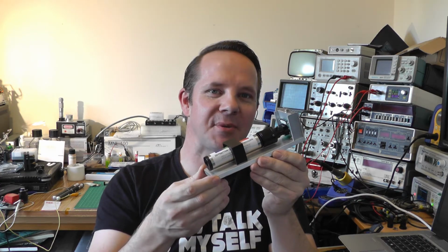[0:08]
In a previous episode, we took a look at a homemade Raspberry Pi spectrometer like this. One of the most frequently asked questions I got at the back of that episode was, well, can we make it smaller? So in this episode, that's exactly what we're going to do.
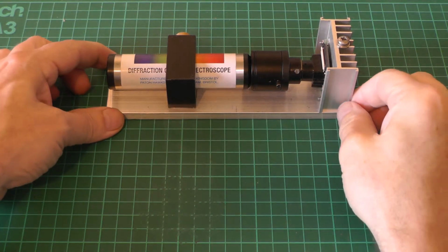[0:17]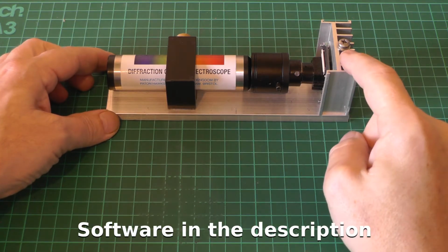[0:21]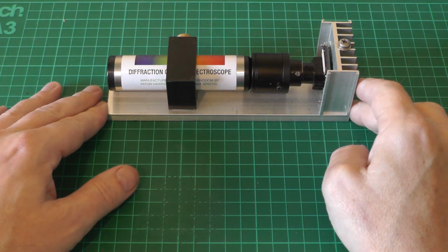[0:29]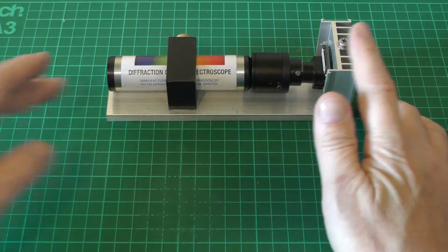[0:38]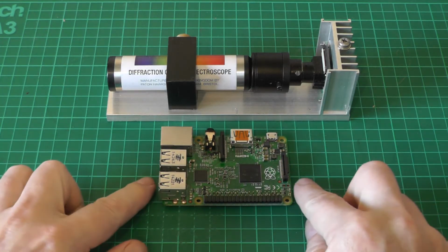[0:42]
So let's go. Back in episode 20, I demonstrated the homemade Raspberry Pi spectrometer, which very simply consisted of a Raspberry Pi camera, a zoom lens that I picked up off eBay, and a diffraction grating spectroscope, which came from Paton Hawksley, who are a UK company that produce diffraction gratings and spectroscopes for educational purposes. Yeah, it was a pretty useful tool. It's a little bit on the large side. If we compare it with, say, a Raspberry Pi 3, yes, it's quite a large spectroscope.
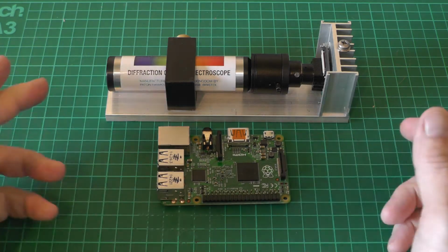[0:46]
There's been a lot of comments, you know, can we shrink this? Can we make it any smaller? There was some talk on Hackaday about maybe integrating something like this into tricorders, like Star Trek tricorders, right? There are actual projects where people are trying to build these things. Can we shrink this thing?
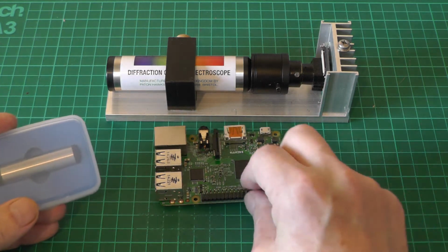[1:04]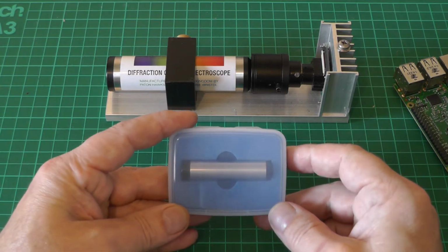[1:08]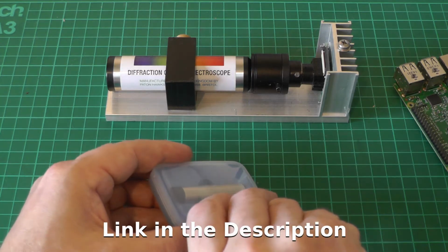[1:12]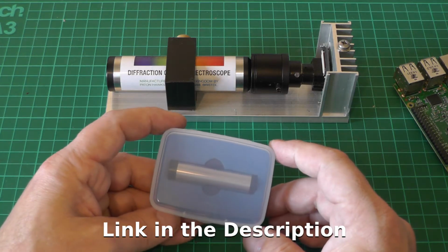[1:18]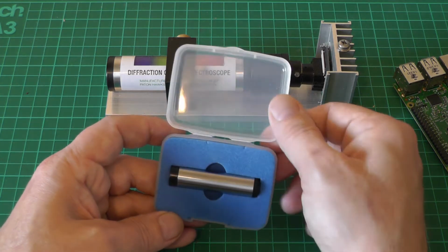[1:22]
At the back of the video where I demonstrated this, the director, Tom, from Paton Hawksley, actually sent me this, which is a miniature version. Really, really generous gift. This isn't a sponsorship or anything like that. It was just a thank you for the orders that have been generated, essentially. He sent me some other kit as well, which will be featured in upcoming videos, no doubt, diffraction gratings and slits and so forth.
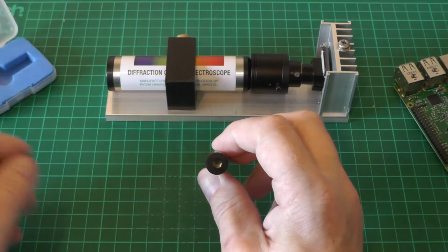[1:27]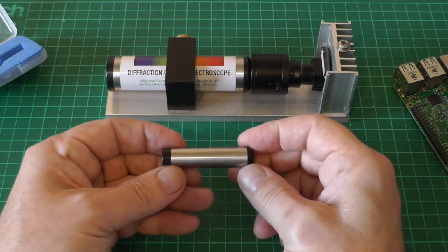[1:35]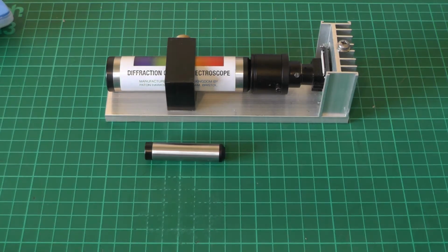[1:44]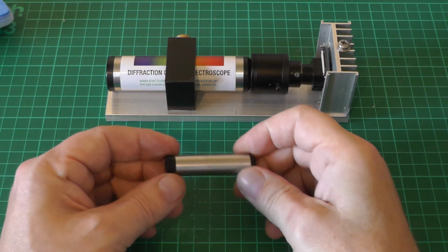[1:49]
But let's take a look at this. This is a very, very tiny version of the diffraction grating spectroscope. We can see the slit in the end there, and then we have the eyepiece that you'd look through to see the spectrum. It has to be said, when I tried this out with my eyeball, this performs just as well as the larger version there. So obviously the question is, can we build a Raspberry Pi spectrometer out of this and make a very, very small diminutive version of its predecessor?
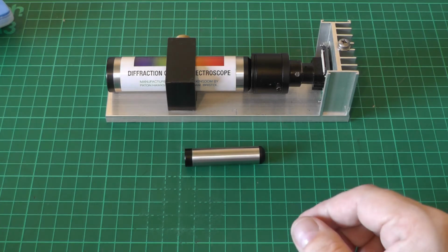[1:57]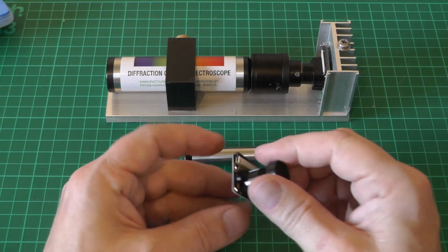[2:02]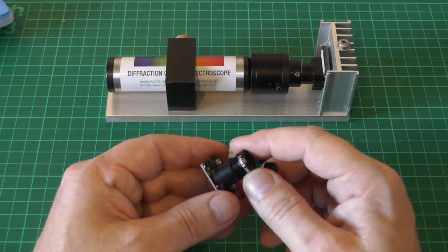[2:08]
So I've gone shopping on eBay. I've picked up a little Raspberry Pi camera with an M12 mount. This actually has the IR cut filter removed, so we should be able to see a little bit of infrared. It should be noted that these cameras by default come with a standard sort of CCTV lens, so the focal length of this is 3.6 millimeters. And we'll talk a little bit about why that's important shortly.
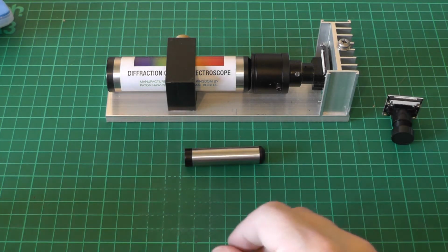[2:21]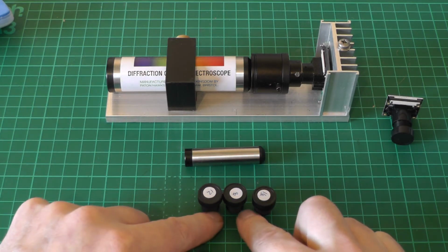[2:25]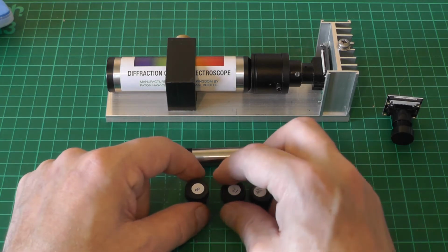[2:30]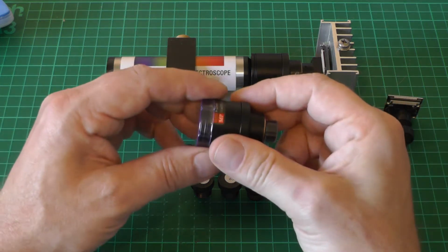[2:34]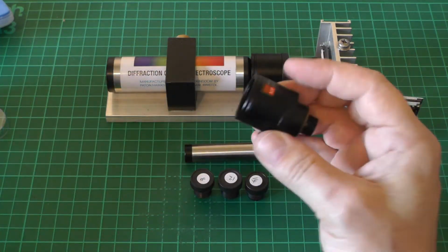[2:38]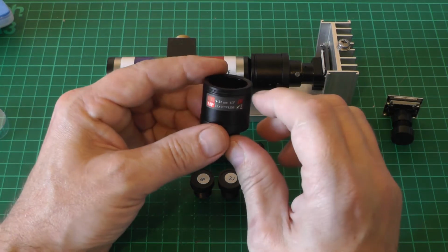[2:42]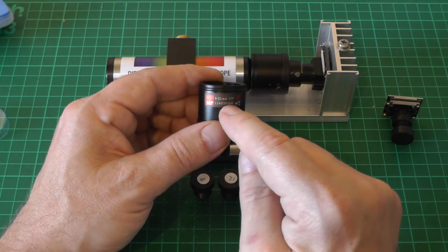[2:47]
I also picked up a selection of third-party lenses to try, and these also have different focal lengths. We've got an 8mm focal length, a 12 and a 16. Why have I gone to all this effort? Well, if we take a look at the lens I was using in the previous version, I've got quite a few of these lenses. They're handy for AI projects and computer vision. What's important about these is the focal length is variable between 9 and 22 millimeters, and this is what gives us the level of zoom, essentially.
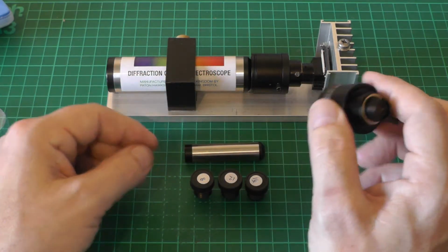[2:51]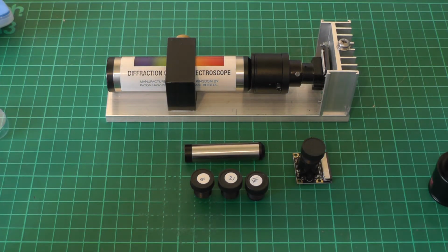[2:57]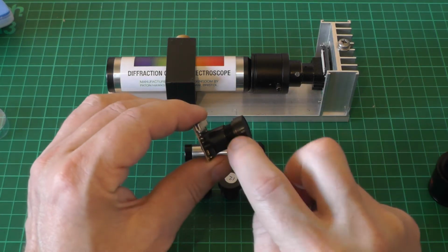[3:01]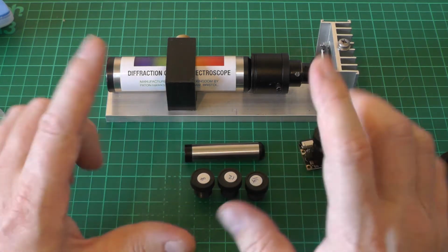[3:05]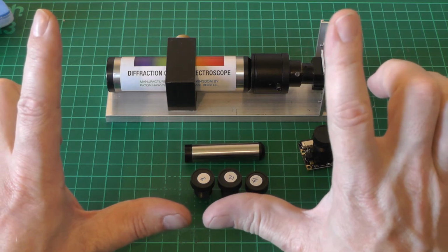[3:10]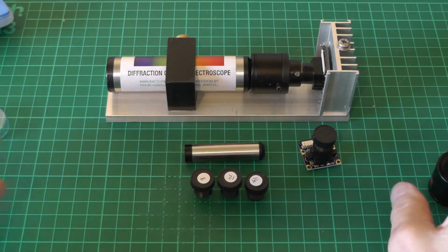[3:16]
So if we think about a standard lens, 3.6 millimeters, the idea is that we get a very, very wide field of view, so the virtual image that's produced just about fits on the CCD. If we start using longer focal lengths, we get a larger virtual image projected onto the CCD, which means that we get a larger view, in our case, of the spectrum that we're looking at. So yeah, that's it in a nutshell.
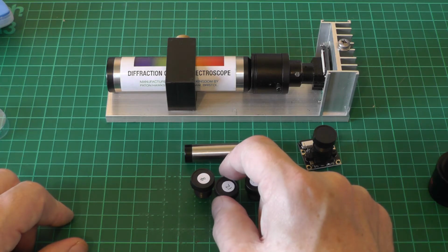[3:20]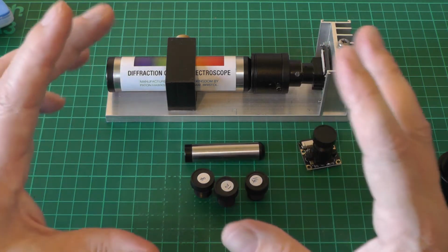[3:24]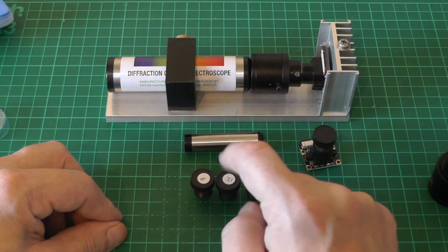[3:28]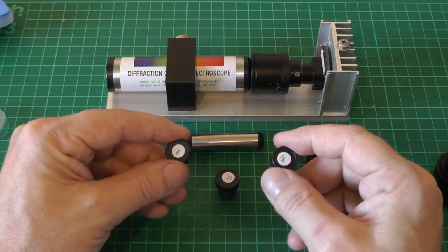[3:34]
Out of these three lenses, I'd guessed ahead of time that 12 millimeters would be exactly where I wanted to be in terms of fitting the entire spectrum in the field of view of the camera. So that's what we're going to try today. I do also have 8 and 16 millimeters, and honestly, I just bought these for experimental purposes. There are obviously other things I'll want to do with cameras if we're thinking about things like machine vision.
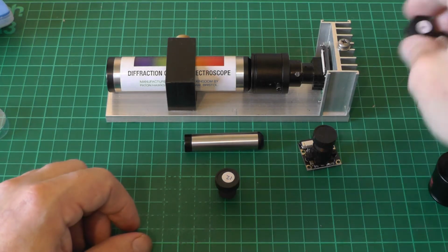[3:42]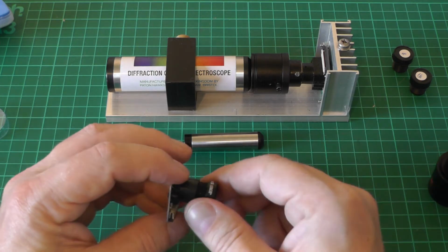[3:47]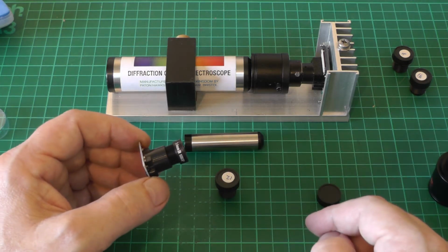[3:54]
Just out of curiosity, when we first try this, we'll try it with the standard lens so that you can see the difference. We'll see what kind of field of view you get with the standard lens, and then obviously we'll try the 12 millimeter.
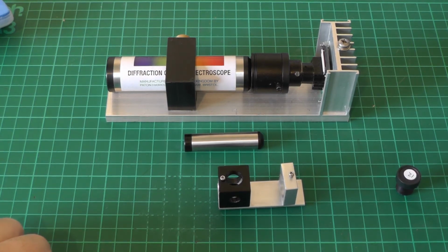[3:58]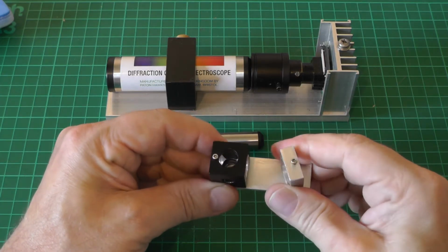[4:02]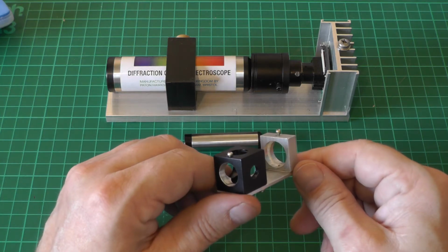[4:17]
So I built a small aluminium jig for this. Everything's adjustable, so the back camera mount we can actually rotate on its axis if we want to look at a particular end of the spectrum. It's all just manufactured out of little bits of aluminium. I'm a big fan of metal, but I'm sure some of you have 3D printers and you could probably come up with something creative with a 3D printer.
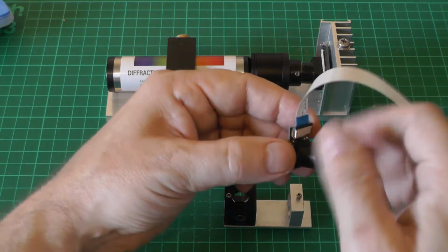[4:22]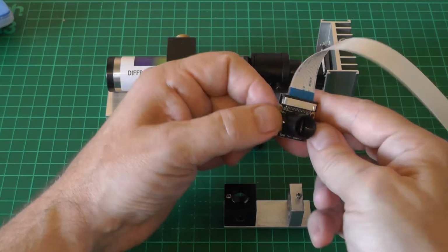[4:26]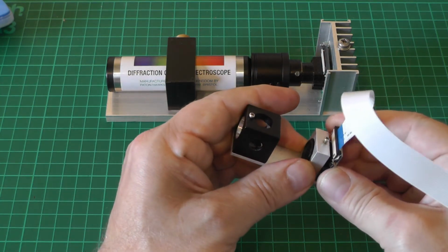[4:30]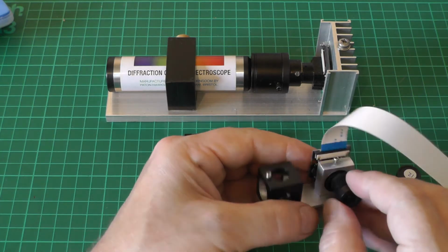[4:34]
Anyway, I have the camera hooked up to the Raspberry Pi. Before I can fit it in this mount, I need to remove the lens. Everything's a friction fit, although I do have set screws to retain things in position. And we'll use the stock 3.6 millimeter lens first. I think my biggest complaint about the Raspberry Pi cameras with the M12 mounts is more often than not the mounts are plastic. It's very, very easy to cross-thread them.
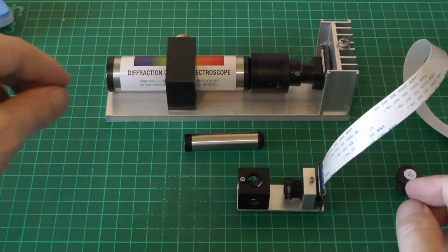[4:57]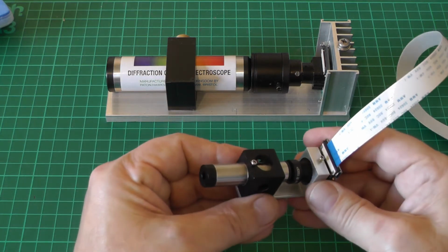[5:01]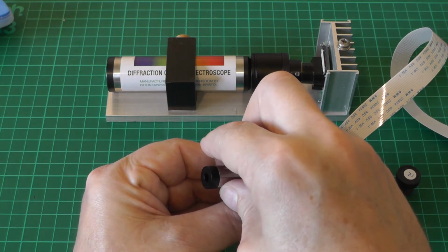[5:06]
So there's my camera mounted. And then we just need to take the spectroscope. I'll just line this up and then we'll take a look at the software.
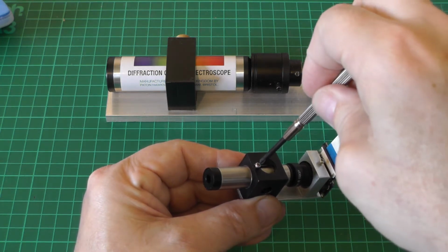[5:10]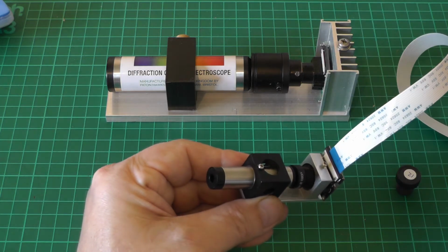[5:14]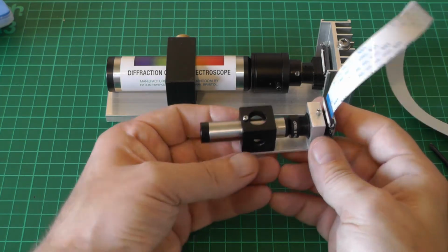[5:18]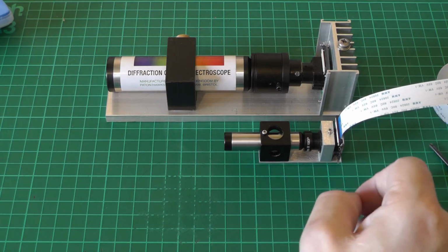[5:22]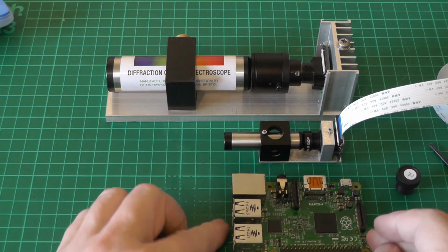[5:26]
So that's the spectrometer assembled. As you can see, very, very much smaller than the original. You're looking at a length of about 80 millimeters. If we compare that with a Raspberry Pi Model 3, it's about the length of the Raspberry Pi. Excellent.
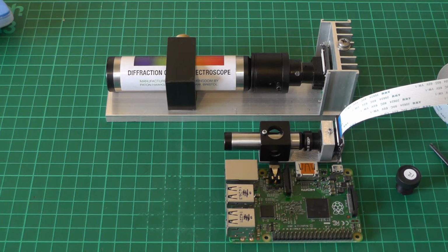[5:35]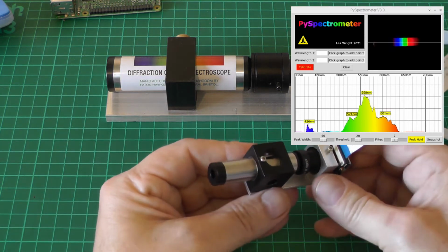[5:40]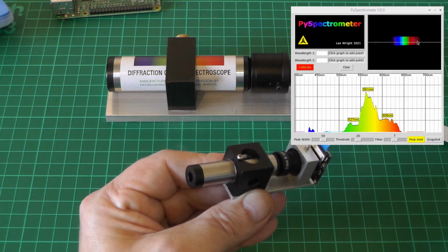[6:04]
So now that everything's set up, we'll just point it out the window and take a look at the software. If I can get it lined up right, we should be able to see our spectrum. Needs a little bit of focus. That's about as good as I can get it. Yes, so we can see very, very small spectrum in the middle there. It looks like we're picking up some IR. We've got a couple of dark absorption bands way over at the red end there. Excellent.
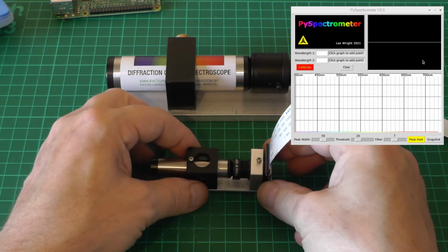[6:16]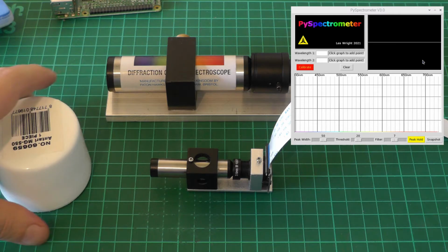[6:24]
I suppose we could attempt to calibrate it. So let's give that a go. I need a white surface. This lid will do. So we'll put peak hold on and we'll give it a quick blast. So there's 405. And we can see how tight this is already. And then we'll give it a quick blast with 650. There's 650.
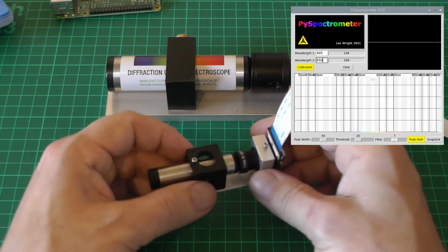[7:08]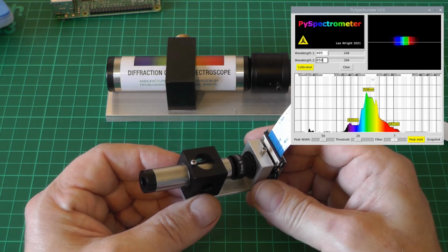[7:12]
We'll hit calibrate. We can see it's done something very, very interesting with my graticule. Obviously, when I wrote this software, it was never designed to have such a narrow view of the spectrum there. But yeah, I think that's something we could maybe fix. Yeah, so there's our spectrum. Now it's kind of difficult to work out where the end is. I can see 700s popping up in the peak, so we're just in the near infrared, I would say.
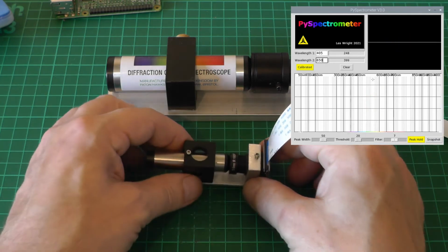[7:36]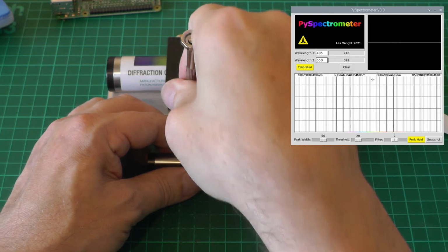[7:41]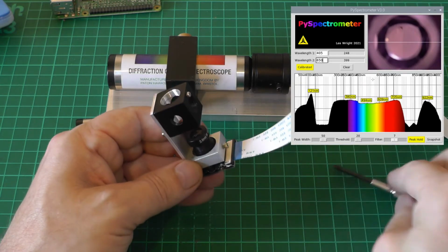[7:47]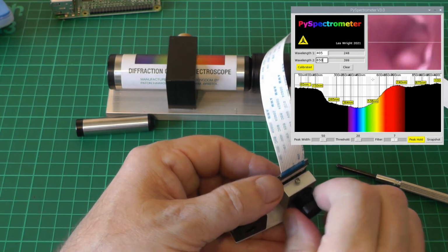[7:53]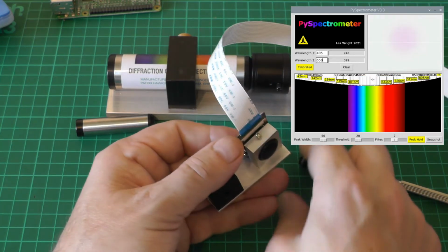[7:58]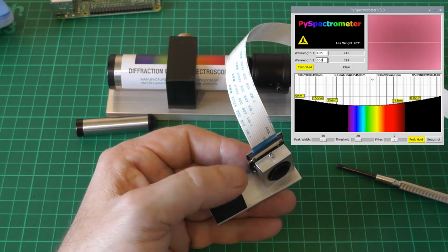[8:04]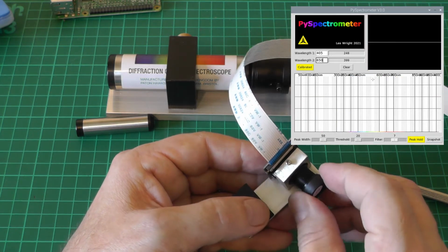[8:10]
Excellent. Obviously, this isn't the sort of best way to run the software. We've got too narrow of a view. So let's disassemble this and we'll replace the lens. So we'll just remove our spectroscope and I should just be able to unscrew the lens and we'll replace it with 12 millimeters. Again, you've got to be very gentle with these plastic M12 mounts.
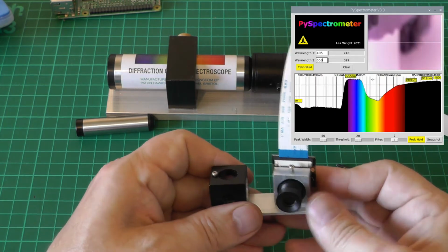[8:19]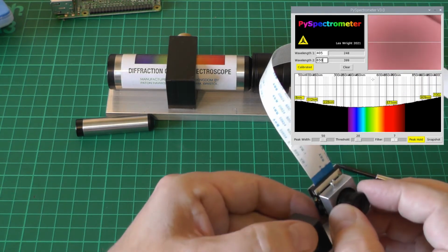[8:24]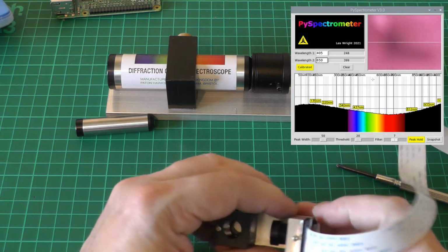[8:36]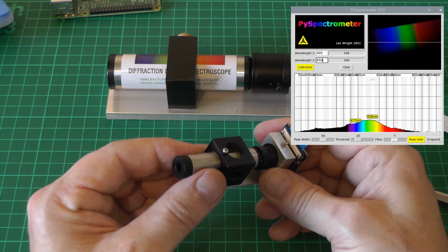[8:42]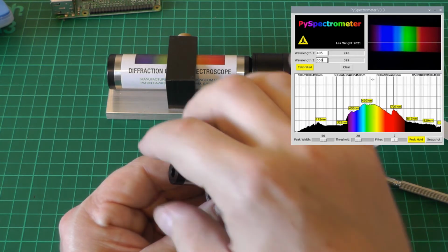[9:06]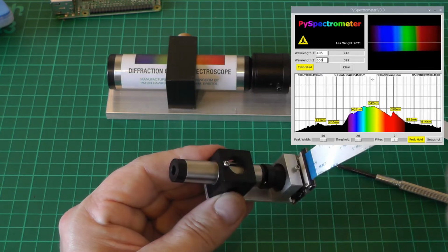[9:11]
Right, we'll take a guess at where the focus is. Should be about right. Let's make sure everything's home. Pull it into focus. I think that's about as good as we can expect to get. Awesome. So now we have a spectrum that is more or less filling our field of view. We'll try and tilt the camera a little bit. That should be about it. And then obviously, you know, we tighten it up at this point. But yeah, looking so far so good. It's looking as good as the larger version.
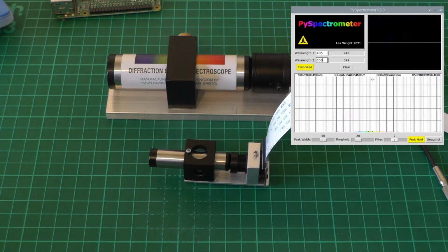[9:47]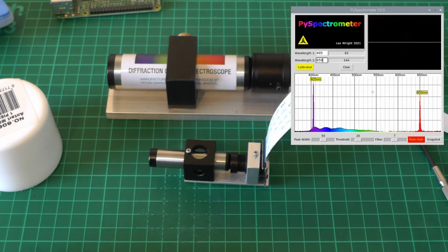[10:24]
Let's do a quick cal on this. Let's see if we can get something a little bit more reasonable out of it. So we'll clear the points. We'll fire on peak hold. So there's 405. And then we'll calibrate 650. There's our 650. We'll hit cal, and now we've got something that looks a little bit more reasonable on the screen there.
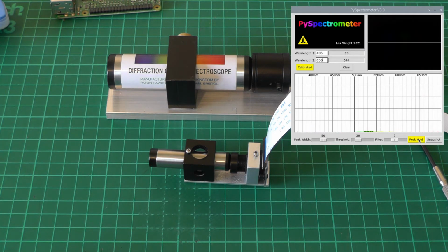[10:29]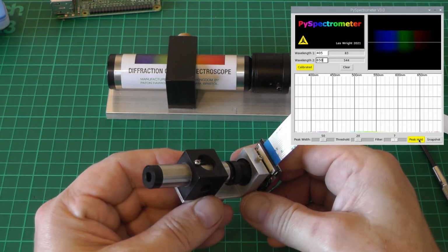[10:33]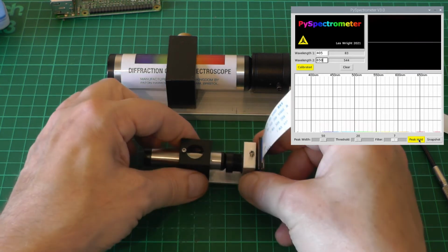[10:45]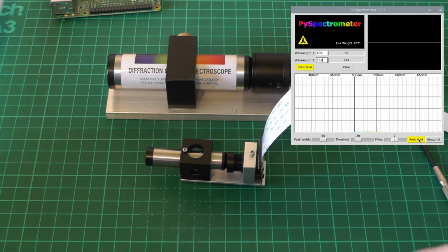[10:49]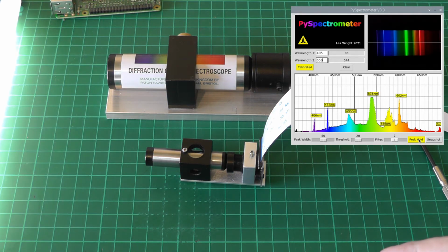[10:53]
So let's take off peak hold and we'll have a quick look out of the window once more. Much better. Awesome. Like I say, every bit as capable as the larger version, but in a much smaller package. While we're about it, I have a fluorescent lamp on the bench. Let's see some lines, some emission lines. Excellent. Look at that. Absolutely fantastic.
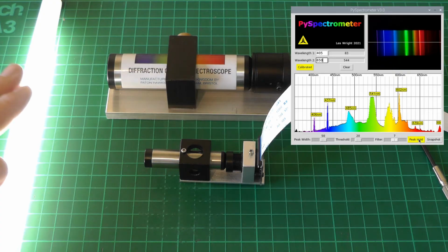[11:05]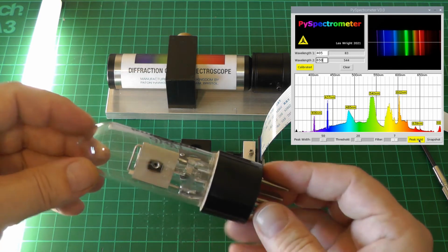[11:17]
While we're on the subject of fluorescent tubes, everybody likes to see emission spectra. I mean, it's marvellous seeing all those little peaks in there. So I've got a few more tubes that we can try out today, just because why not? I'm doing a video, so we might as well see some stuff. I've got this, which is a deuterium lamp.
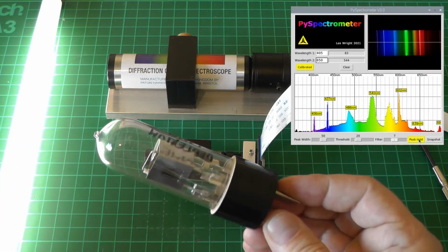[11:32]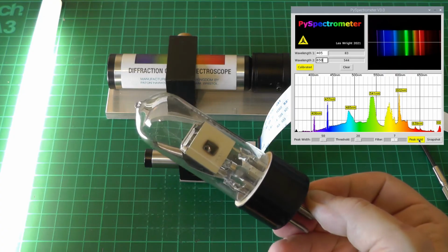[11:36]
This emits mostly UV, but I do believe there should be the deuterium alpha line somewhere in the red, and there should be a fairly decent continuum in the middle of the emission there as well. This was something I picked up off eBay for like £5, which is not a bargain. You'd be looking at like £300 for a lamp like this. So we'll maybe give that a go.
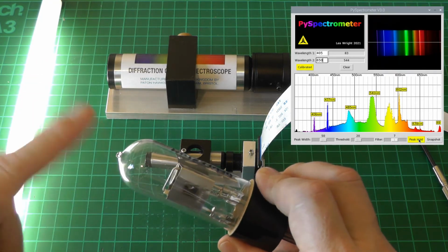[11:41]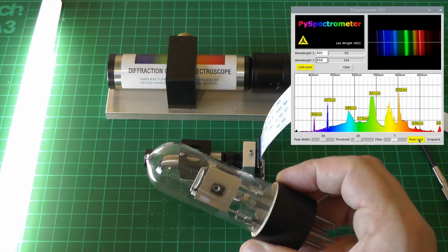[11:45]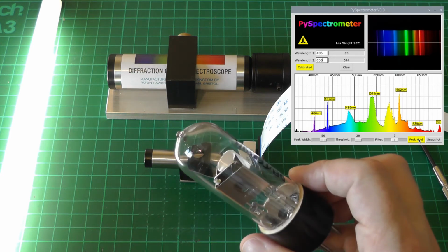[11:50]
One thing to note about things like deuterium lamps, they emit copious amounts of ultraviolet. So whatever you do, don't look at them when they're in operation, and don't expose your skin to them for too long.
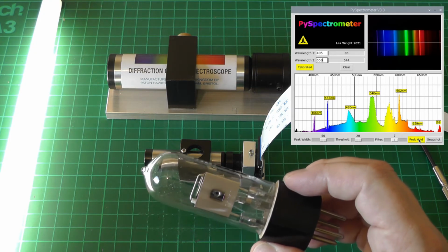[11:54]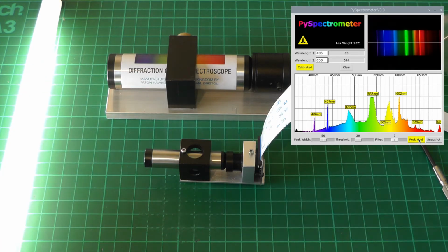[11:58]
That's how you get skin cancer and corneal ulcers, right? Nobody wants those kind of things. But we'll give it a quick try in a minute. I've got some other lamps as well.
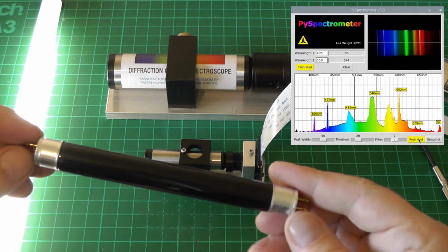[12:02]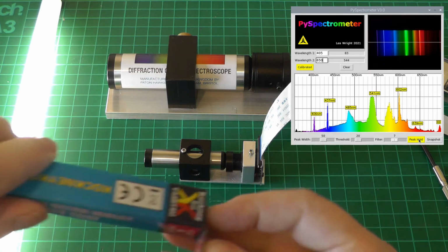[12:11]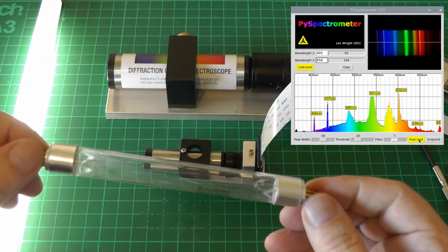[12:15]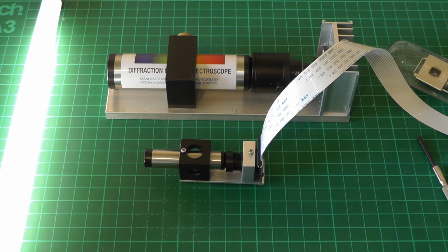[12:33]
I picked up this. This is a black light, one of those UV black lights. I don't expect we'll see very, very much out of this, but there must be some visible emission that we can see, surely. I picked up this as well. This is a pure mercury vapor lamp. This is a germicidal lamp. And once again, I can't really stress too much the danger of looking into these things. Absolutely don't. The ultraviolet that it emits is really quite dangerous. I think it's UVC. So yeah, it would give you quite the tan, and it can actually damage your eyes.
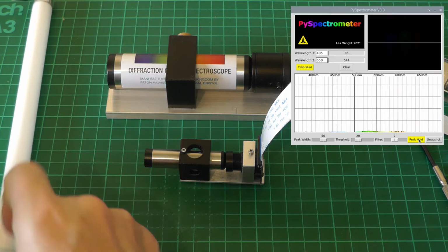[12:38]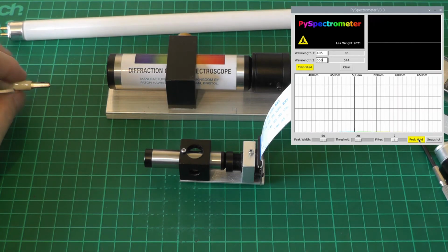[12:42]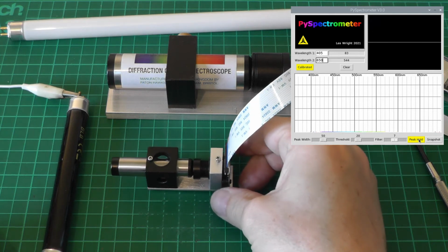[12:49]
So let's just turn off the fluorescent and we'll try a couple of these tubes. We'll try the UV black light first. I suspect we'll have to stick the spectroscope right up to it, but we'll see if we can see anything.
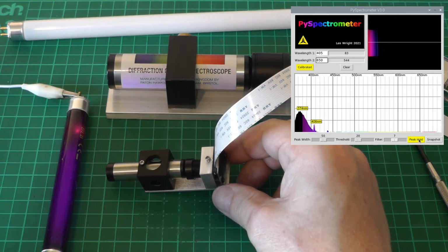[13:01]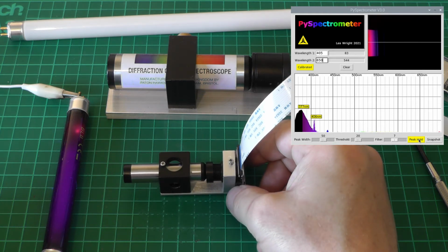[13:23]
Interesting. So we can see a little way into the ultraviolet, which is actually really, really nice. Some guys had asked, you know, how far into the UV can these sort of cameras see? I didn't think it would be very far, but we can see a peak there at 375 or thereabouts. That's actually pretty impressive. I'm very surprised to even see it. We can see a 405 nanometer line there as well. How curious. Very, very interesting. Cool. Let's try another lamp.
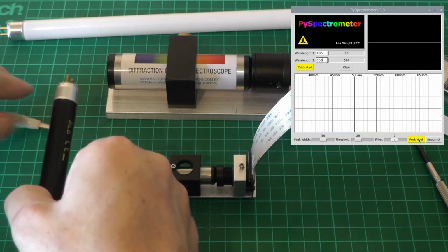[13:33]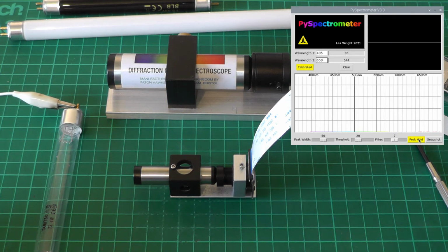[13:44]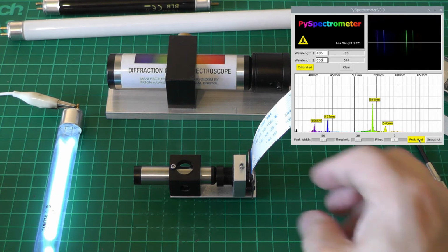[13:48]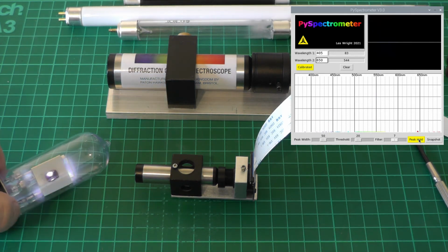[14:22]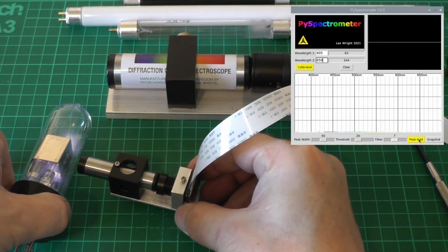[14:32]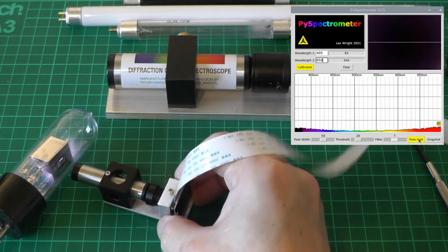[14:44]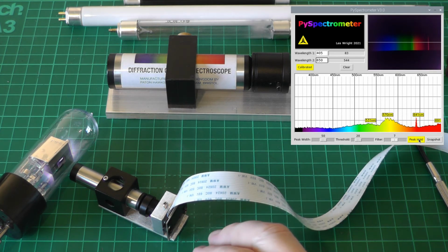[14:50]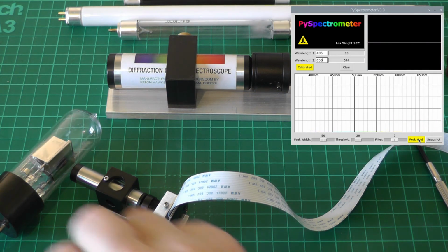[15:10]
Cool. So I have the deuterium lamp hooked up. If I point it towards the camera, we should be able to see its light output. It doesn't look particularly bright, but don't let it deceive you. Chances are high that the UV out of this is excessive. Because it's a point source, it's actually pretty difficult to line it up with the spectrometer. But we can see some lines and a little bit of a continuum. I don't really want to have to touch the envelope, but anyway, not too exciting.
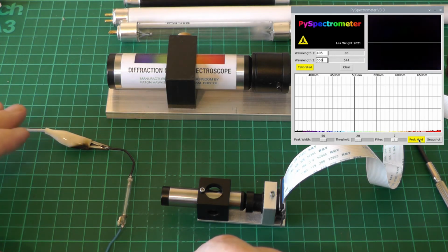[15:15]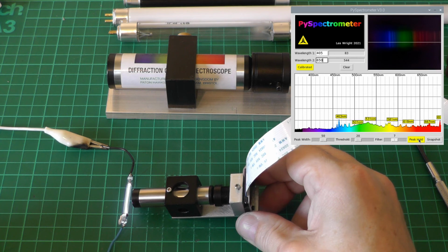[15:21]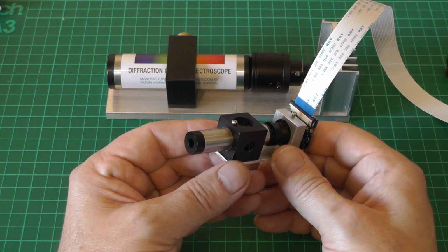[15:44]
And like I say, chances are high that there is lots and lots of ultraviolet being emitted there. So I have a very small xenon lamp that you might find in a camera flash, for example. We'll see if we can get some light out of it. It's quite dim, but there's our xenon spectrum. I suppose if we put a reflector behind it, or maybe even actually drove it properly with a high current, we'd be able to see something a little bit better. But yeah, sure. Certainly detectable peaks in there anyway.
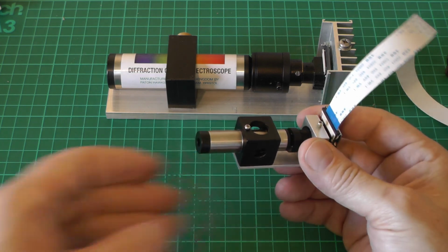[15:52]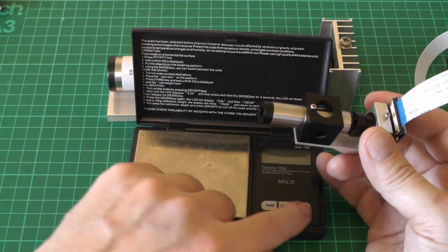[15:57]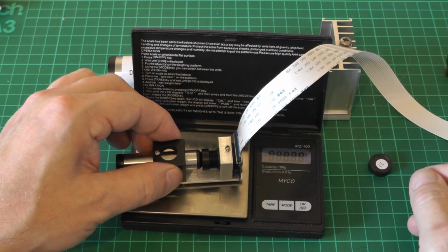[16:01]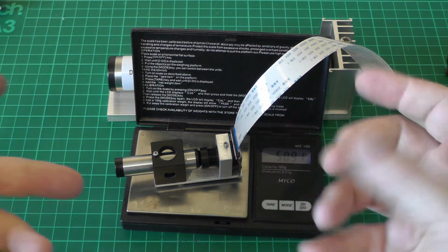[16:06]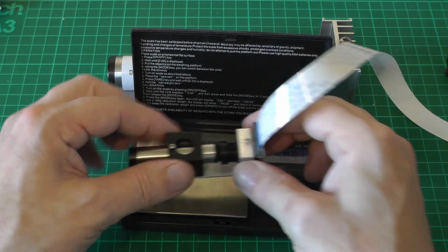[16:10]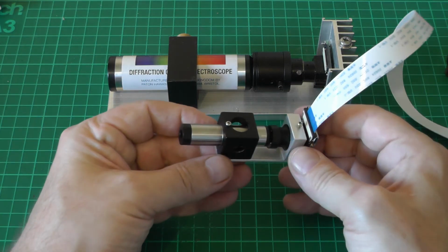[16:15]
So all in all, a very capable and useful miniature spectrometer. As I've said, much, much smaller than the previous version, only 80 millimeters in length. We could weigh it. If you guys are interested in sticking these things on drones or whatever and measuring the spectra of streetlights, I suppose we could do that. So how many grams? 51 grams. Granted, I've built all this out of aluminium. If you're going to 3D print a case for this, I suppose you could get that a little bit lighter. But yes, a very, very useful diminutive spectrometer, it has to be said.
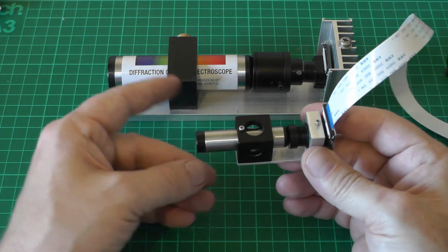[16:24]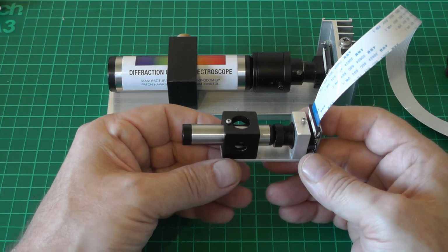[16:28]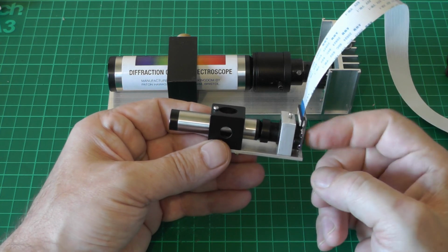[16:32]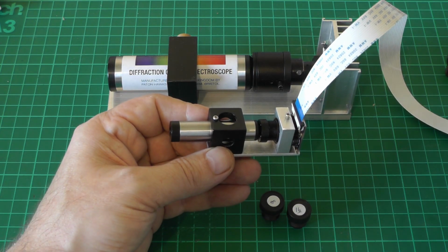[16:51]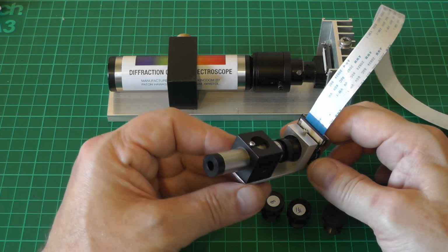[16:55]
The camera is just a regular Pi camera with an M12 mount. And don't forget, if you want to have the spectrum fill the screen as I've shown you today, you want to go pick yourself up a 12 millimeter lens. Again, very, very cheap. You find these things all over eBay. If you're interested in doing things with Pi cameras and whatnot, it's always a good idea to get a selection of lenses anyway, so that you can fine tune your application.